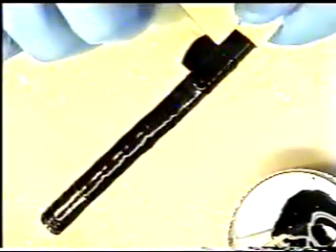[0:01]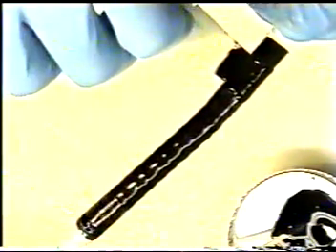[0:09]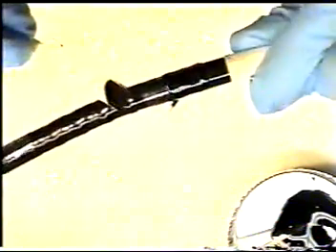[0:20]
Or binding thread or bending rubber. We want the glue joint to be as thin as possible, so during procedure it is passed through the patient without any distress.
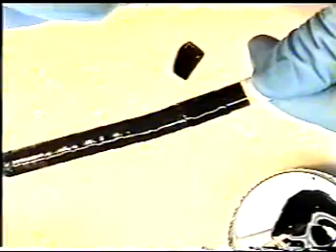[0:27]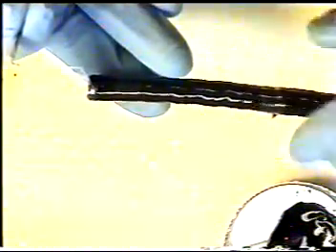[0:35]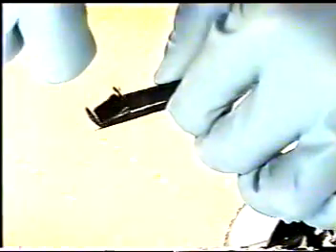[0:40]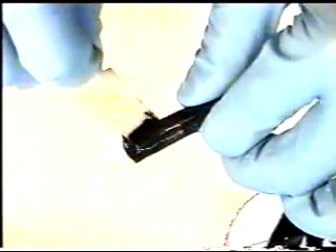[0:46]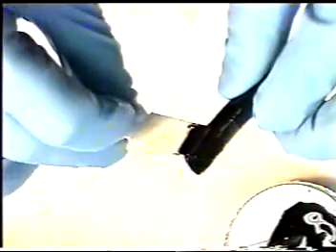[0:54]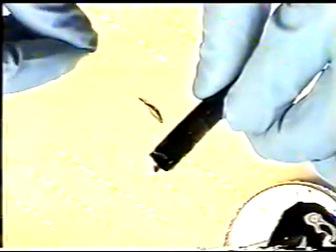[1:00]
We will now glue our top binding. Carefully hold scope, being conscious of our first glue job. Turning scope around. Covering the area in between each Scotch tape loop. Again, making it as thin as possible.
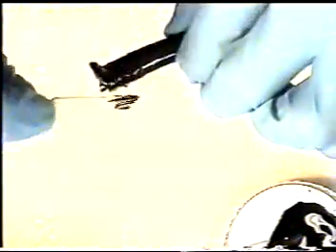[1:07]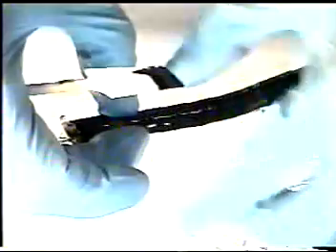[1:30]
Gluing these joints takes time and practice. It may be advisable to practice on an older or loaner endoscope. We have now glued both bindings with our paddle or toothpick.
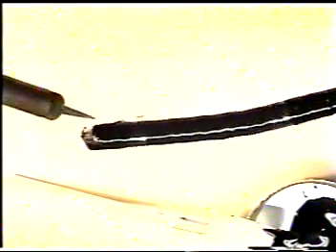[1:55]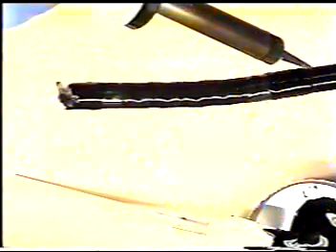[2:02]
Again, at this time, if you notice any objects pointing out of the glue, use your solder iron to carefully melt away foreign object, being extremely careful you do not melt into bending rubber sheath or insertion tube. Once we are sure that glue is uniform with no bubbles or foreign objects sticking out of our glue, we can then remove our Scotch tape.
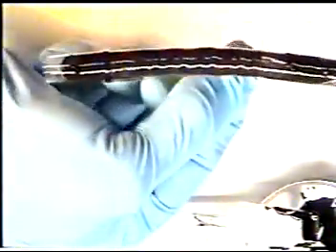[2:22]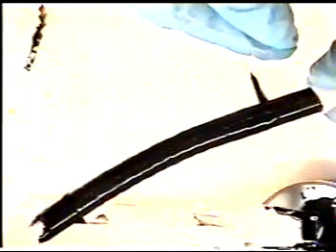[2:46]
The Scotch tape should make a clean binding. Remove all 4 pieces of Scotch tape, pulling towards the glue job. This makes for a clean binding.
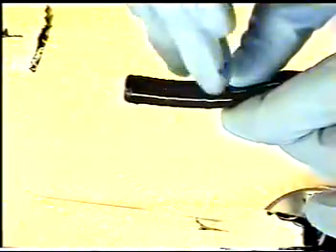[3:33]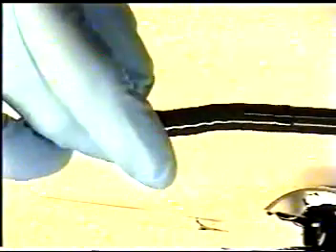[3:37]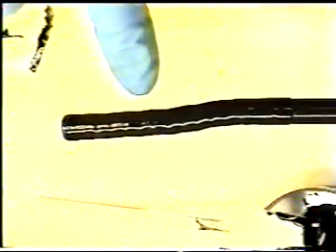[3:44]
We have now removed the 4 pieces of Scotch tape from our endoscope. Be careful not to get any epoxy on the bending rubber or insertion tube when removing Scotch tape.
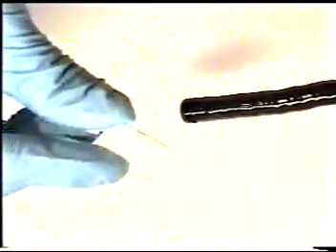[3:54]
Using a toothpick and a piece of lens paper or thin paper toweling, taking a small amount of alcohol, if any bending rubber epoxy has leaked underneath the previous Scotch tape, you can clean away any glue that had leaked out of Scotch tape to make a clean, flush epoxy joint. Turn the endoscope over if necessary in order to reach complete 360 degrees.
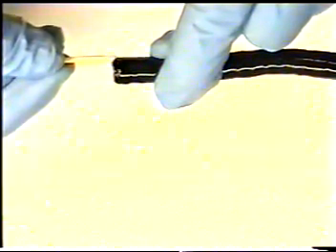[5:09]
Again, any epoxy that has leaked previously underneath the Scotch tape joints can be easily cleaned away with a toothpick and a paper towel. On smaller instruments, you can use just the toothpick and some alcohol and clean up to the glue joint to make a nice, smooth, clean edge.
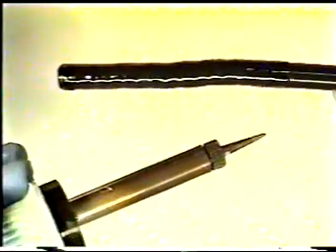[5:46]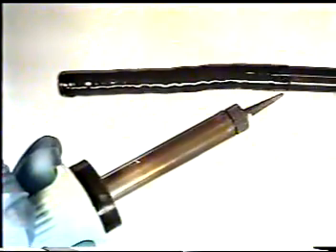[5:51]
If bubbles appear in any part of our epoxy, we can take what's left of our glue and fill in any bubbles or holes that might pop out during our gluing. Another method to get rid of any bubbles or debris is, again, use your soldering iron and gently touch epoxy to fill in hole or remove debris.
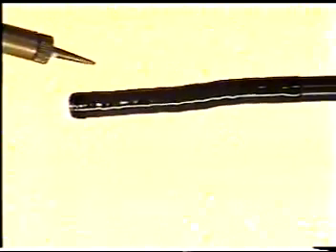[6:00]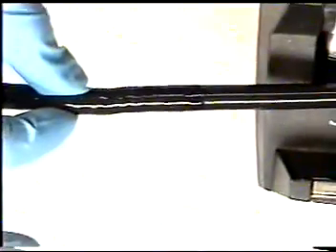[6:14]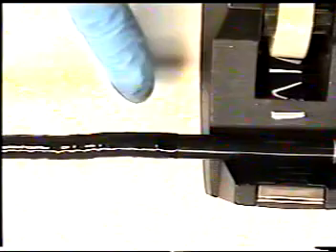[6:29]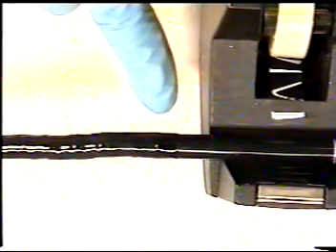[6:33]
Once you feel that glue completely covers and looks cosmetically good, take any object, in this case a tape dispenser, laying the insertion tube in cradle so our glue will not touch either our working area or any other objects which will destroy our glue.
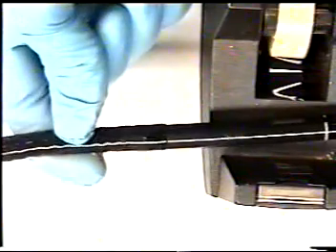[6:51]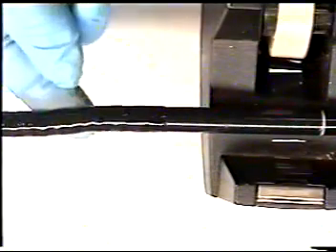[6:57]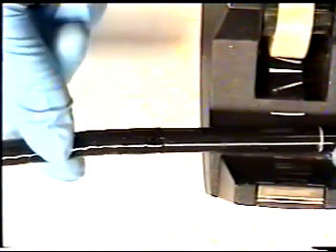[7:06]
Depending on manufacturer specifications, glue may take some time to set up. You will periodically have to go back to check your glue in order to turn the instrument if glue is sagging on one side, and to check for any bubbles or foreign debris that might stick out through our glue joints. Again, be sure to check your glue to see if it starts to sag. It will be necessary to turn the instrument around in order to make a uniform glue joint.
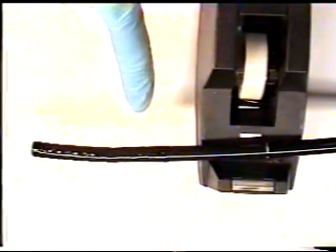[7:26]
It is advisable to let your bending rubber sheath epoxy dry overnight and at least 24 hours. This will allow the epoxy to set to manufacturer specifications in order to withstand repeated sterilization. If bending rubber epoxy is not let to set dry properly, it will chip off endoscope during sterilization and possibly even during examinations. It is very critical that your epoxy is allowed to dry properly overnight.
After your epoxy is dried overnight or 24 hours, it is advisable to check the instrument for any leaks by pressure testing the instrument in water and checking for any leaks that may be in your bending rubber replacement. If there are leaks, you will need to repeat the procedure and reapply another bending rubber sheath.
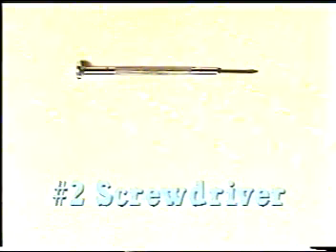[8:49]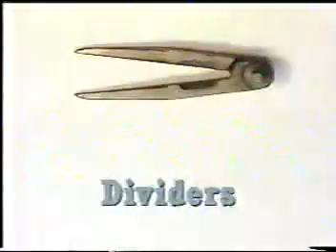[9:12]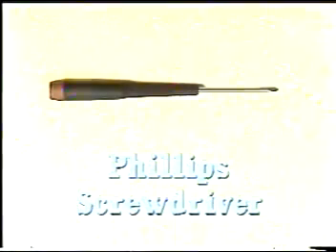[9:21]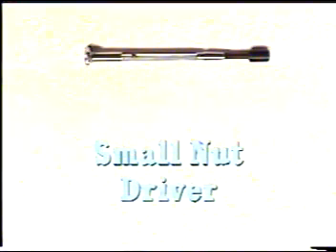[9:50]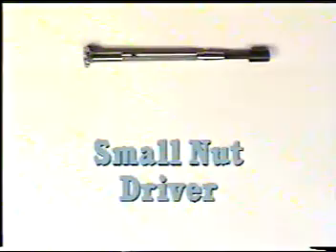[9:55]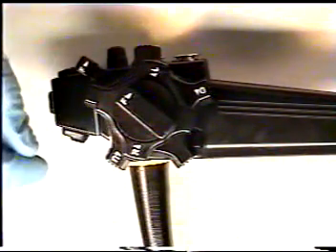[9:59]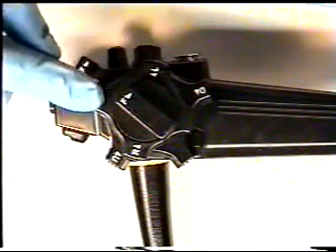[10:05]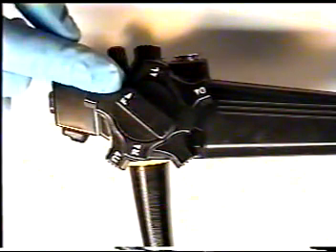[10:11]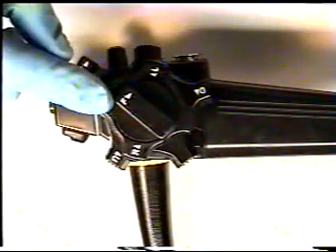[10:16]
We will now disassemble the up, down, left, right control section in order to gain access to it, to adjust the up, down, and left, right lock knobs, and to make the necessary repairs and adjustments if there are leaks in the body control section.
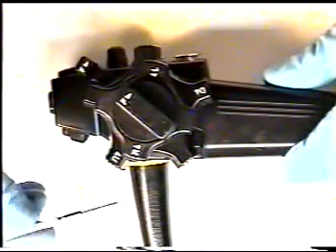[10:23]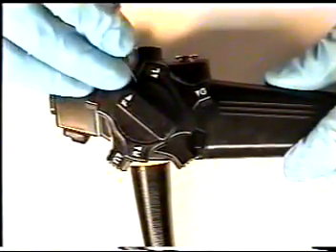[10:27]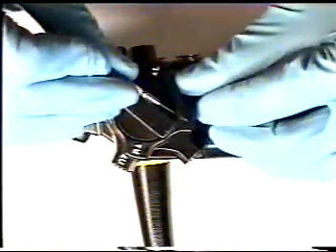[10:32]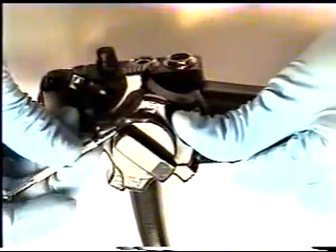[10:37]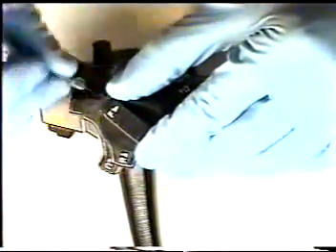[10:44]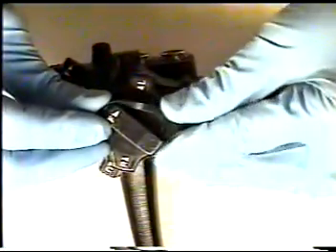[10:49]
First step, using your number 2 screwdriver, is to remove the left-right free lock knob trim ring. 90% of the time this ring will break due to the fact that it is glued in with black RTV, so it will need to be replaced.
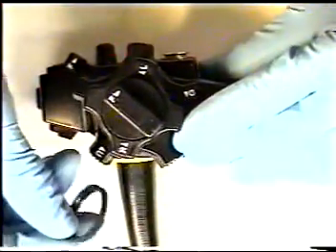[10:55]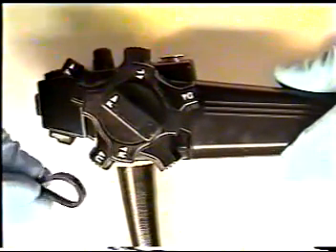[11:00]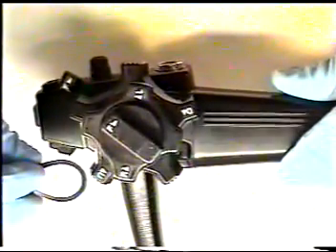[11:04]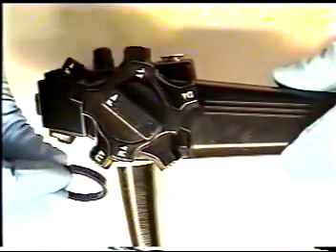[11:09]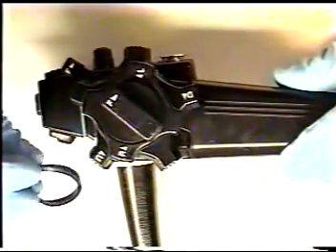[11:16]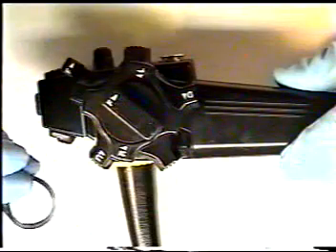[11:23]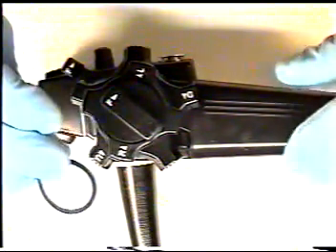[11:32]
When disassembling the up, down, left, right lock knob assembly from the body, it is best to take off each piece one at a time, laying it on your work area in sequence. So when we reassemble the up, down, left, right lock knob assembly, we can reassemble back in sequence with the parts starting from beginning to end. First, we have the left-right trim ring.
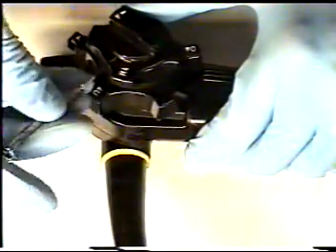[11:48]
Next step is to loosen the 3 set screws which hold on the left-right lock knob assembly cap. Find your set screws and loosen all 3.
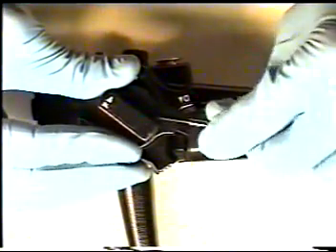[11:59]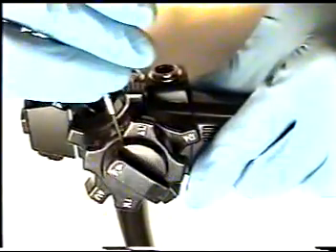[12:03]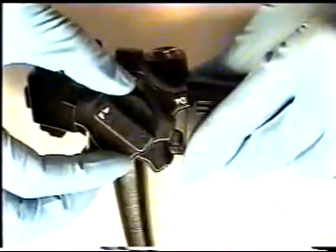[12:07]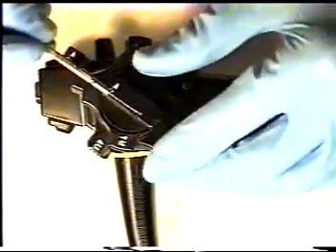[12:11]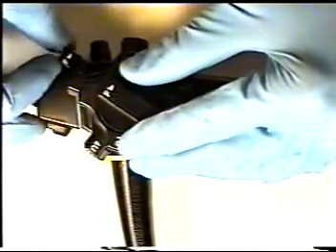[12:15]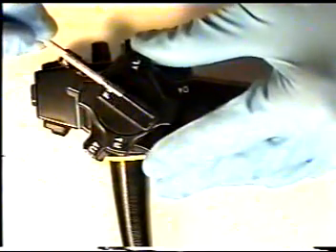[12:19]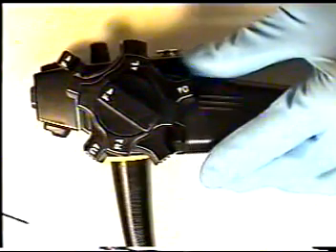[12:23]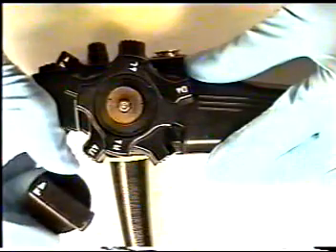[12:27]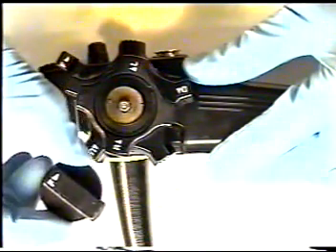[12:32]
Notice where the lock knobs fit when they are in the free position. They both line up diagonally to the head of the instrument. Again, take the parts off in sequence, lay them on your work area so you can reassemble back in reverse order.
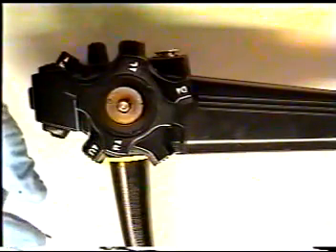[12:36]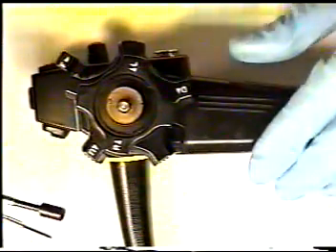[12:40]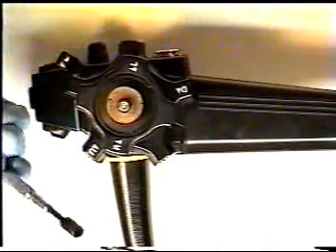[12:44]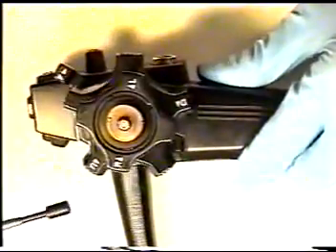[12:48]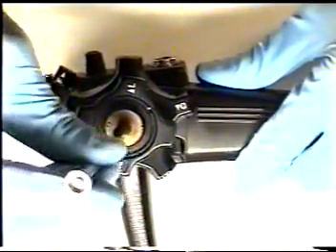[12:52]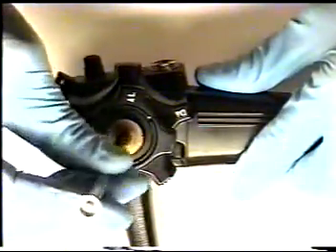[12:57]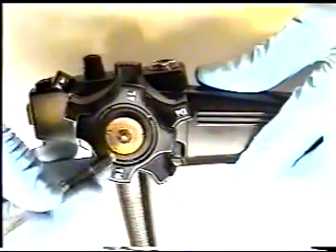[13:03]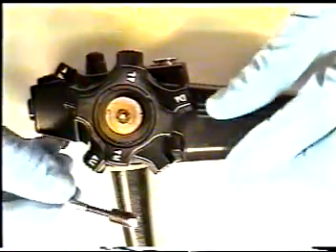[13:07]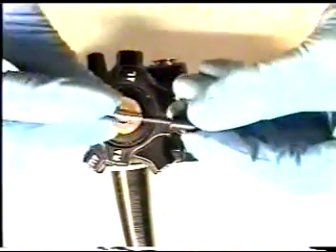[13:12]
Retrieve your small nut driver and loosen the 2 small nuts on the top of the left-right lock assembly. Put these with the other parts in sequence.
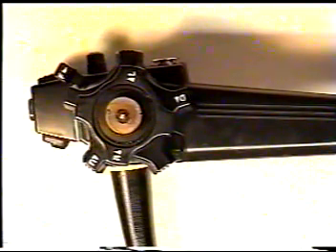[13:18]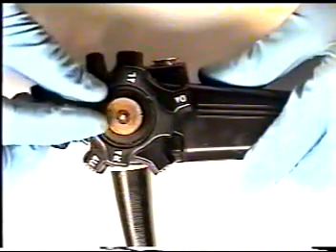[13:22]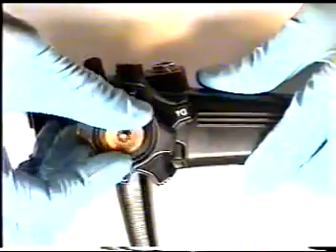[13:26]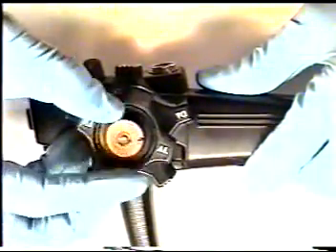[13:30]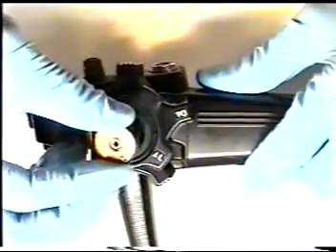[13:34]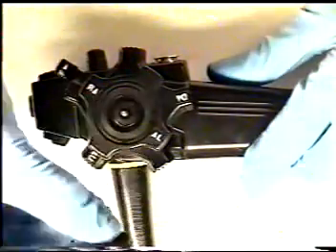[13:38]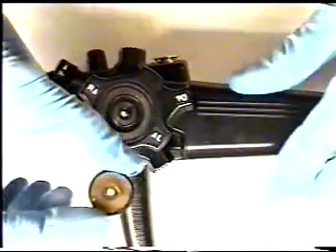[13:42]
The next step is to unscrew the left-right lock assembly counterclockwise. This assembly will only unscrew counterclockwise. Remove this assembly. Be sure to keep it intact. There are many small parts internally. Put this part with the others in sequence.
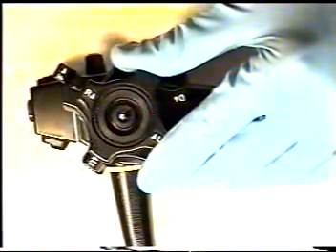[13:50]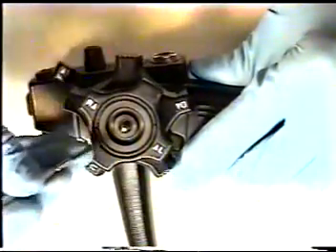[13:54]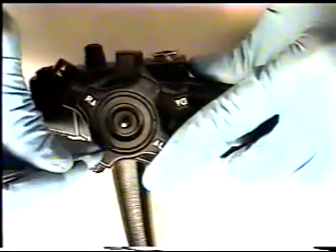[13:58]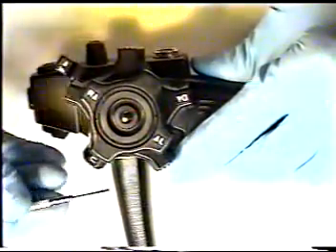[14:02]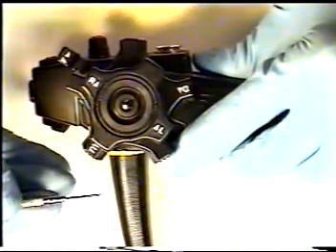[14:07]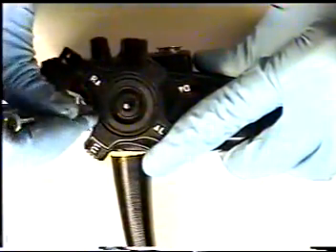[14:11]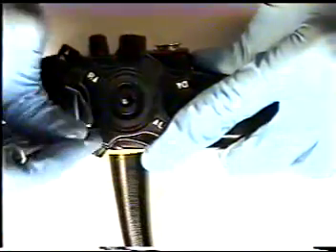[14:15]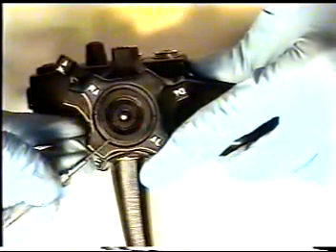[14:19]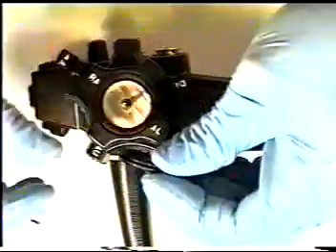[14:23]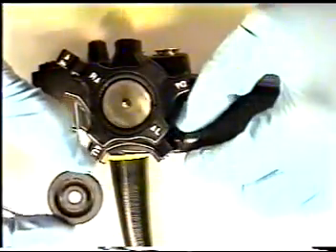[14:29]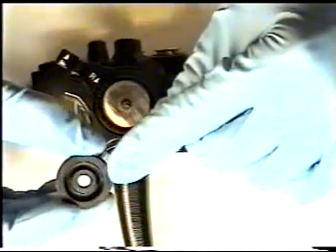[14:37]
Next step is to pry out the left-right knob airtight cap with either a small number 1 or 2 screwdriver, tweezers, or dull knife blade. Be careful not to damage the O-ring inside or the knob itself. This part, when reinstalled, will have the groove on the top. Underneath it is flat. The indented groove will be on top. Put this with the other parts in sequence.
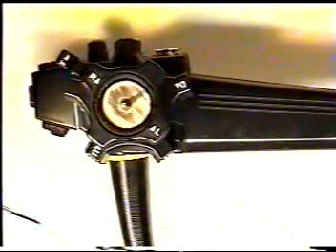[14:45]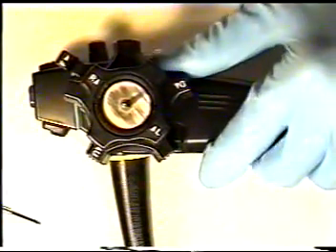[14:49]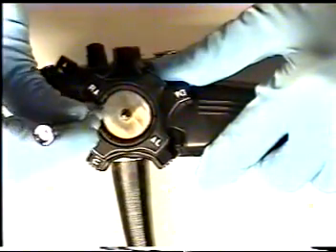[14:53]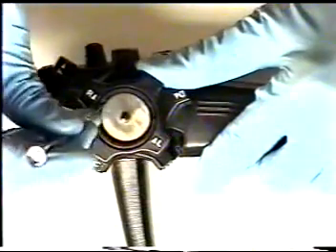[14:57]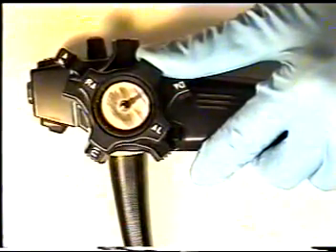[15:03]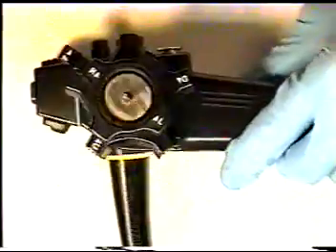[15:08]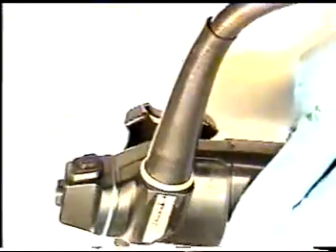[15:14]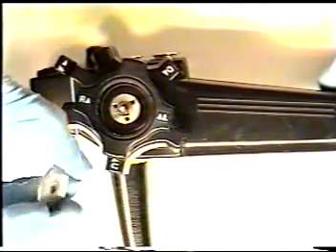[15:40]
Next step is to remove the left-right pressure plate with either a small number 1 or 2 screwdriver or tweezers. It may be necessary to turn over the endoscope and tap out this piece. It will fall out with gravity. Put your pressure plate back with the other parts in sequence.
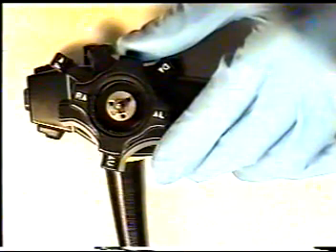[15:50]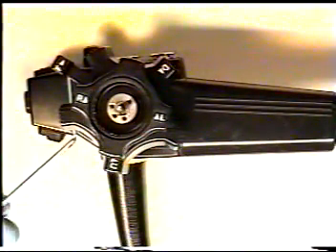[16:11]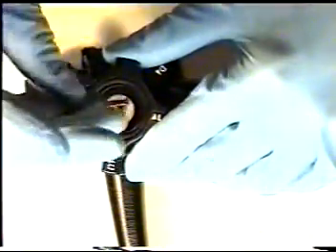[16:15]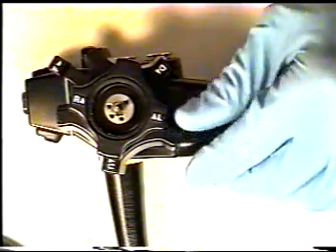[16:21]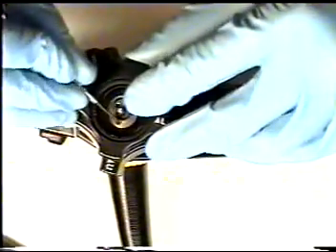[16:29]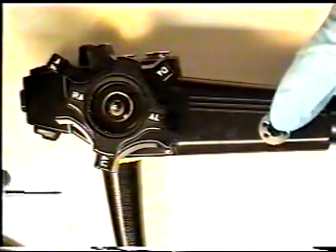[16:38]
Using a Phillips head screwdriver, unscrew the 2 small Phillips screws in the left-right pressure plate bottom retaining ring. Be sure not to lose these 2 small Phillips screws. With a small screwdriver, remove the locking ring. Put this with the other parts in reverse sequence.
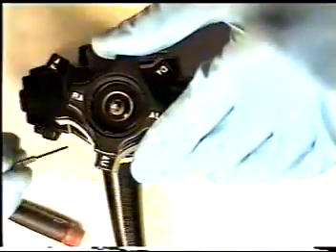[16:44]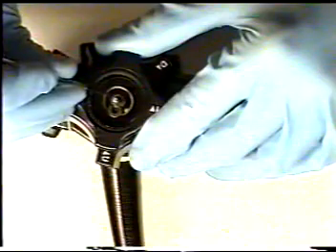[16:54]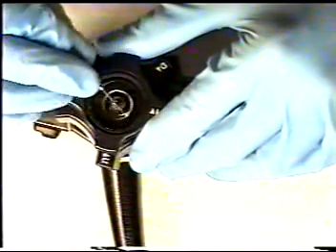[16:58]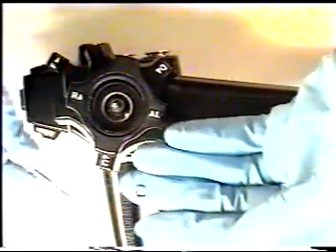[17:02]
Slide off your C-ring from your left-right bottom pressure plate, which attaches to the center shaft. Put your C-ring with the other parts again in sequence.
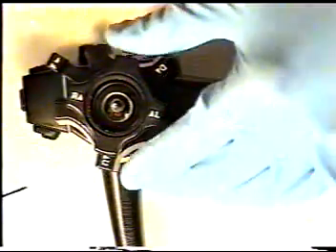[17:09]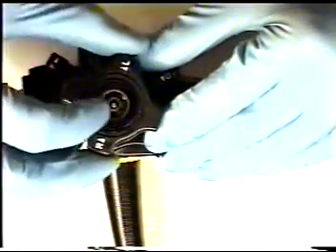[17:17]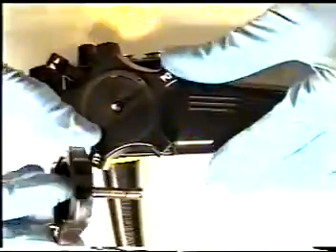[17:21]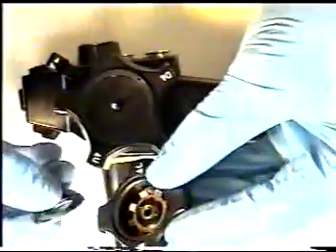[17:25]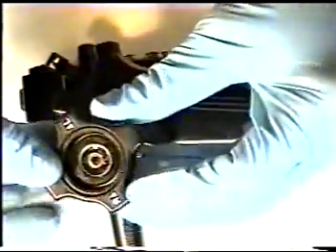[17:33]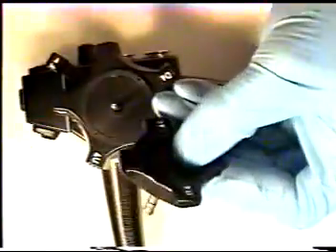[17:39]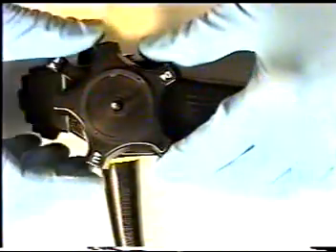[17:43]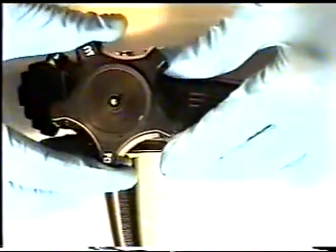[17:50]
We can now pull off the left-right lock knob. It should slide off. The pressure plate will fall out, but you can keep this inside the left-right knob assembly. Put the knob assembly with the other parts in reverse sequence. The up-down knob will now be able to pull off straight up the center shaft, exposing the up-down free locking mechanism. Put your up-down knob with the other parts in reverse sequence.
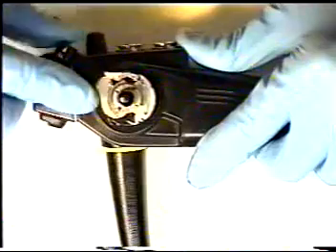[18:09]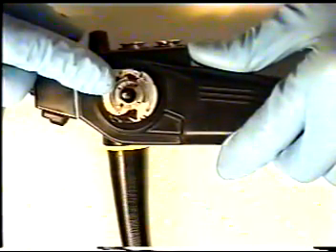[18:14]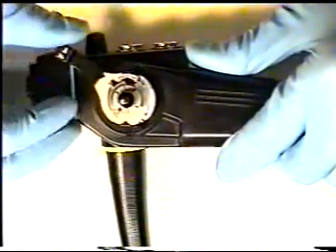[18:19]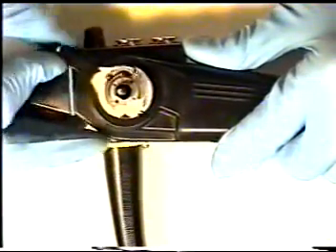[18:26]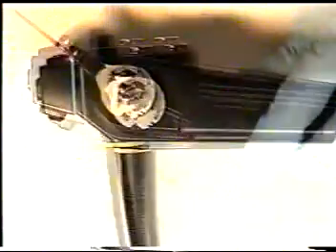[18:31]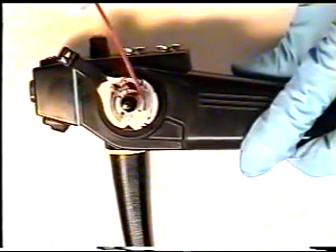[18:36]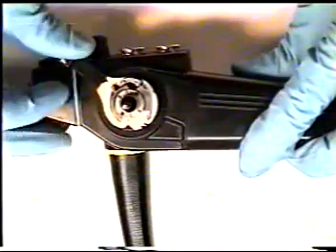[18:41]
This is as far as we will go with our knob assembly. We will now lubricate this locking assembly with a good quality LPS or WD-40. Spray a very small amount of LPS or WD-40 in the up-down free lock mechanism.
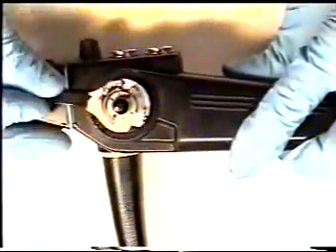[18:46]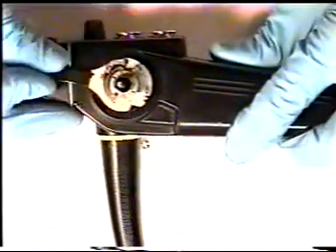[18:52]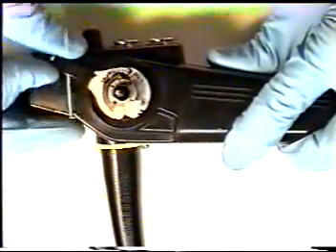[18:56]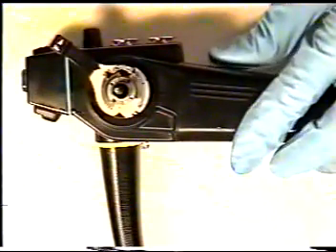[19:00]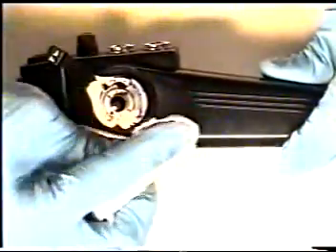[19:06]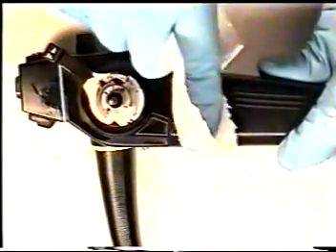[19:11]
Move the assembly back and forth to let the greaseless lubricant permeate the locking mechanism. Use a paper towel to clean up any excess greaseless lubricant from the Olympus body section.
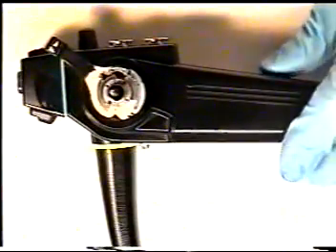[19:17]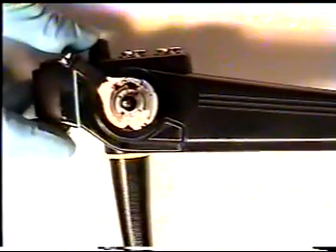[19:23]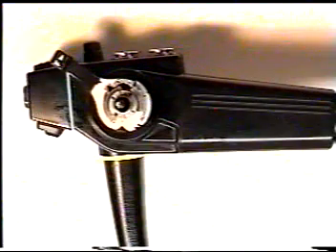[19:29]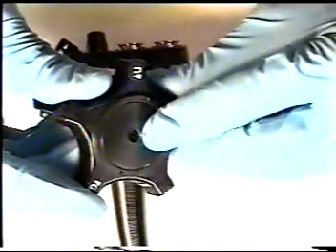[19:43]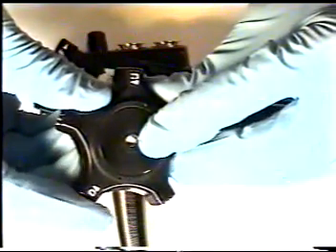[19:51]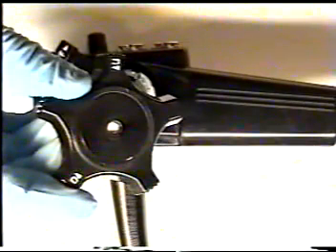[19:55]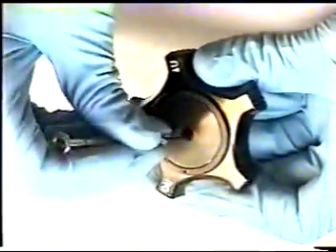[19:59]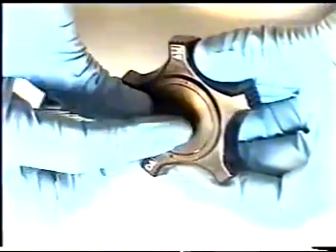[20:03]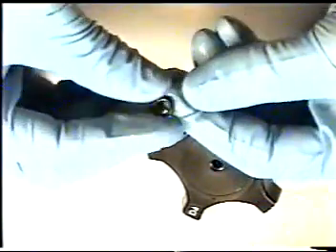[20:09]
We will now reassemble the Olympus up-down left-right locking knob assembly and correct any leaks upon reassembly. The up-down knob has internally an O-ring. You can remove this O-ring with a small screwdriver, being careful not to cut into the O-ring itself. Again, being very careful, remove the O-ring from inside the up-down knob shaft. 9 times out of 10, this is the O-ring that will cause leaks in the up-down knob itself.
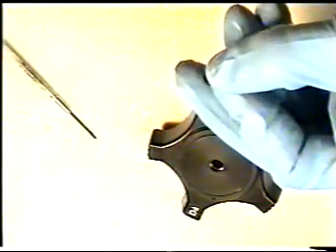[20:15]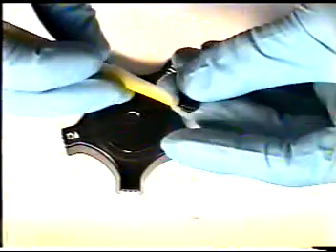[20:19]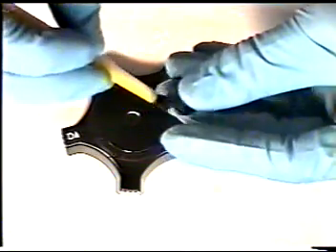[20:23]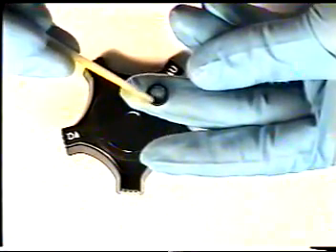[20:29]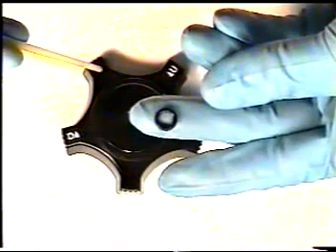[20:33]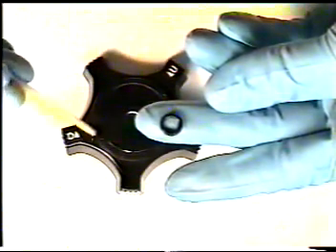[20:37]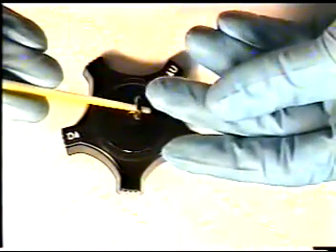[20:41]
Again, make sure your O-ring is clean of all debris. If this O-ring has any pit marks or scratches or cuts, or if it's even broken, it will need to be replaced, because it will not form a proper airtight seal with the knobs and the shaft. So if this O-ring is damaged in any way, it will need to be replaced. Reinsert your O-ring back into the knob section.
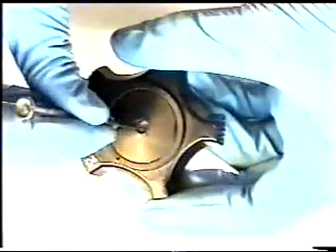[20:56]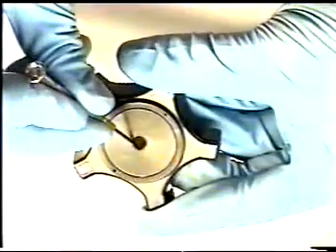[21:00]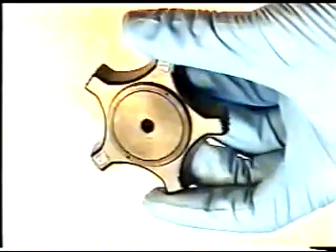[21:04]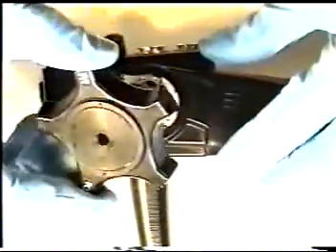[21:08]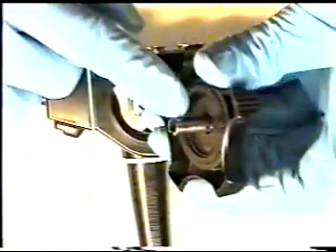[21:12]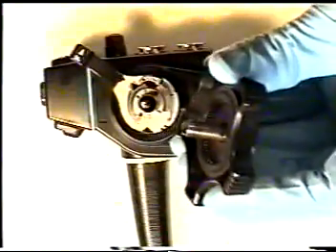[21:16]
It will take a little doing. You might need your small screwdriver to fit it back into the slot at the top of the knob. Reinstall the up-down knob back onto the shaft. Be sure there is no debris on the up-down shaft.
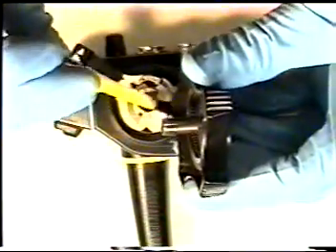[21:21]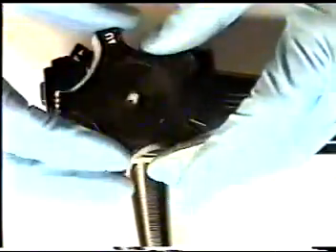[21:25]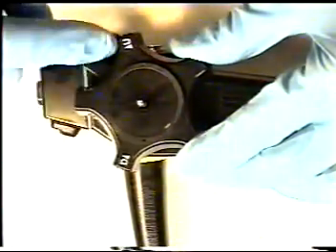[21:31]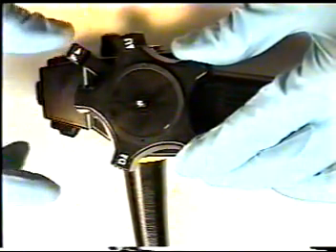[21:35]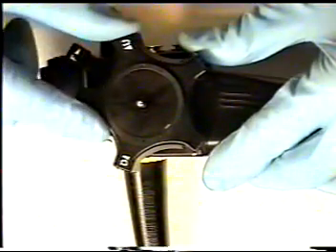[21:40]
You can use your paintbrush with white lithium grease to clean off any debris. Slide your up-down knob onto the shaft with the up-down letters pointing towards the head of the instrument. We will now adjust the up-down knob.
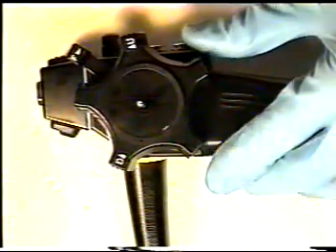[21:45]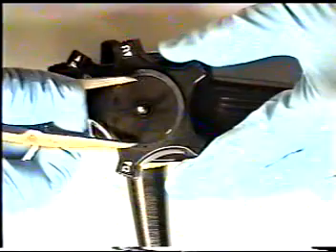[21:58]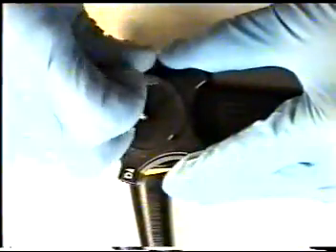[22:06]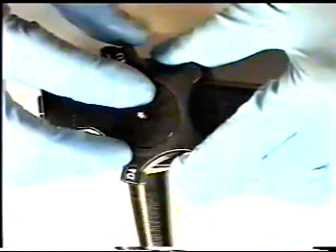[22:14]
Olympus knobs are usually very tight. You can, however, loosen them a little bit by taking a pair of dividers and fitting them into the 2 holes on the ring on top of the up-down knob. You can unscrew this ring and remove it, taking off the knob itself from the up-down assembly.
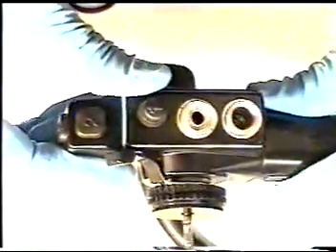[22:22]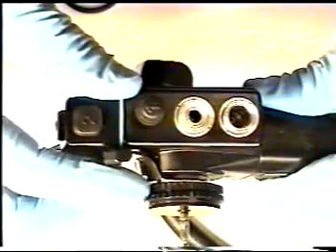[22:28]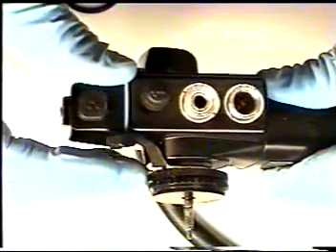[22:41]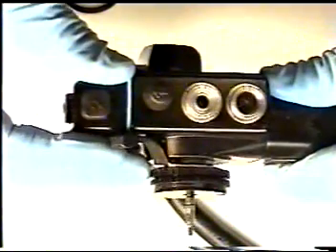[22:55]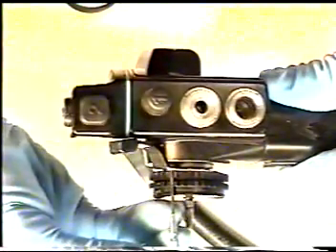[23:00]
There are 2 sets of rings. In order to loosen the tightness on an Olympus scope, these rings move independently. You'll need to unscrew this ring counterclockwise to loosen the stiffness of the knobs. Be sure to match the grooves when reapplying the knob.
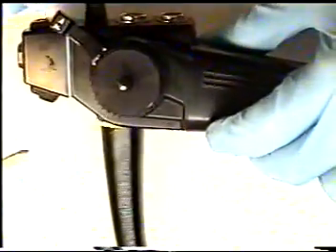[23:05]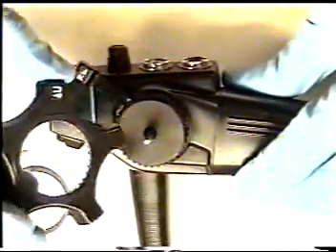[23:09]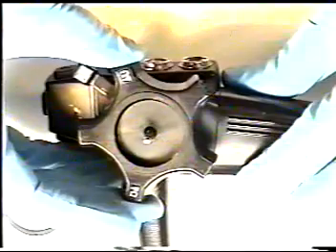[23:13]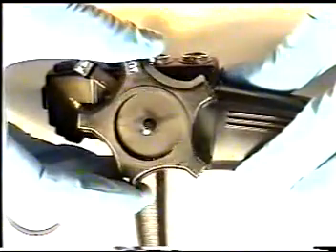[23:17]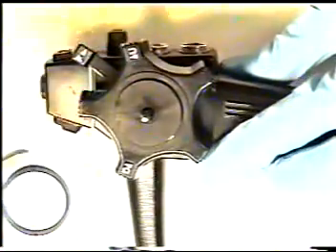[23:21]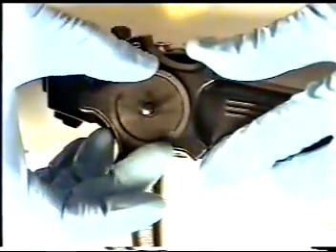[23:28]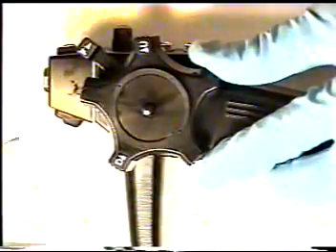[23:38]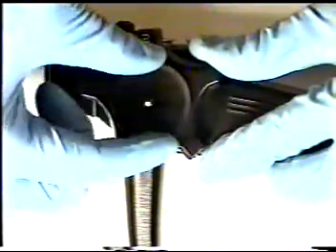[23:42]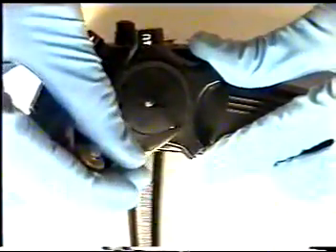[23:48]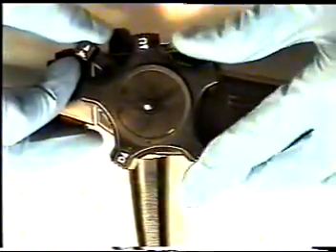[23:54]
Once you have turned the grooves counterclockwise a few turns, reapply the up-down knob. Place your retaining ring back on over the threads and tighten clockwise. Give it a good hand-tight seal.
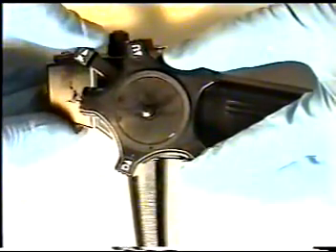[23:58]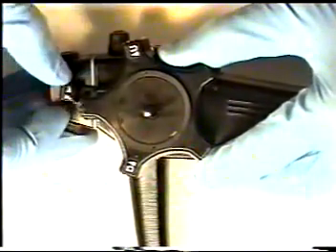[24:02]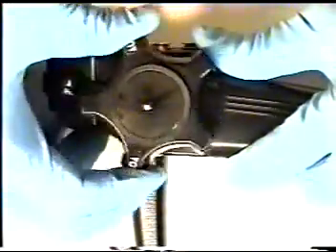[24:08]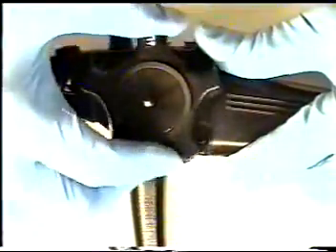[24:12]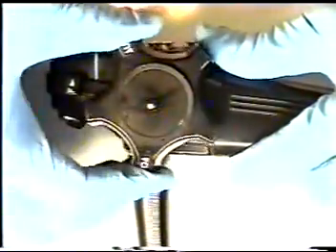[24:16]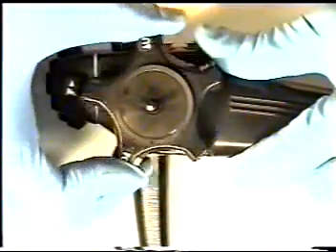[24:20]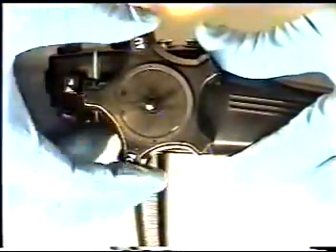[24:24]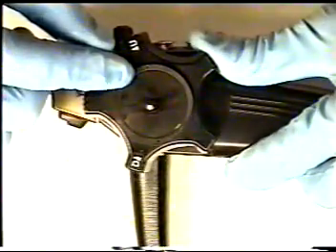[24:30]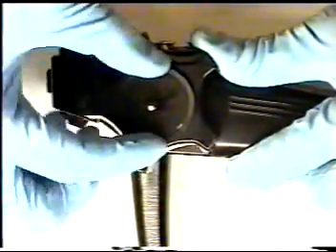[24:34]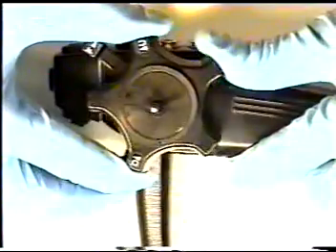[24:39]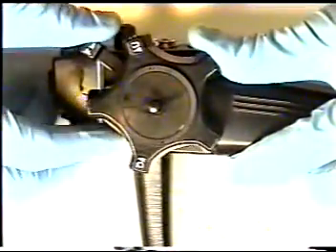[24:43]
Now, apply your lock by flicking your up-down lock assembly towards the head of the instrument. And now you can feel to check for the tightness that you have released by adjusting the cam on the up-down lock assembly. If it is still too tight, you can remove the ring again and adjust the cams clockwise or anti-clockwise to get the proper tightness that you prefer.
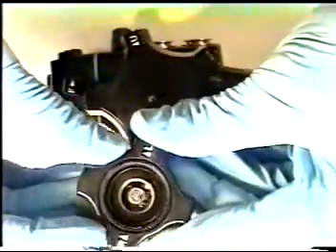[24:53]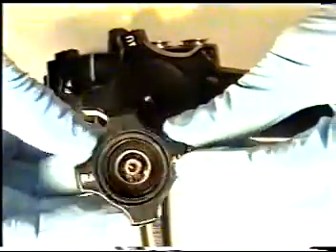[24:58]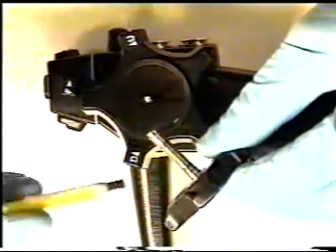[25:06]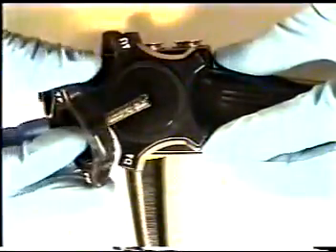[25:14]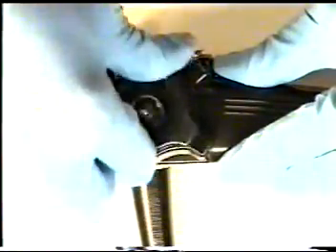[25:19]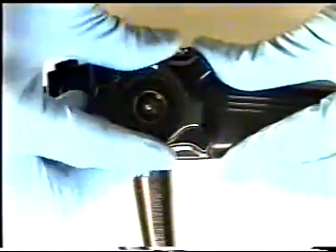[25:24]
We will now reapply the left-right knob assembly. Again, be sure that the letters and arrows face towards the head of the instrument. Clean off any debris using your paintbrush and white lithium grease. Slide the left-right knob over the shaft, feeling the shaft going into the body section, making contact with the grooves inside the chain drive assembly.
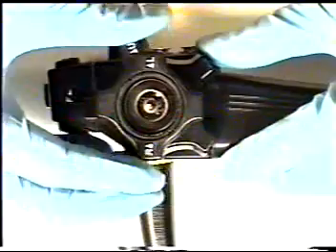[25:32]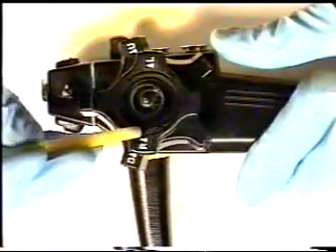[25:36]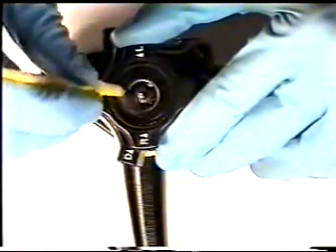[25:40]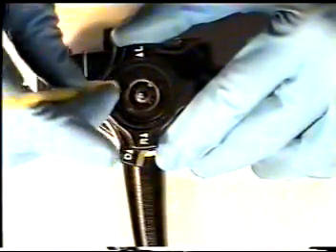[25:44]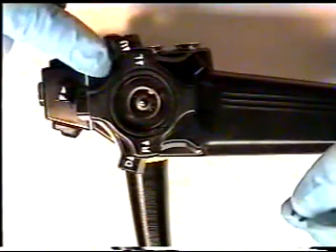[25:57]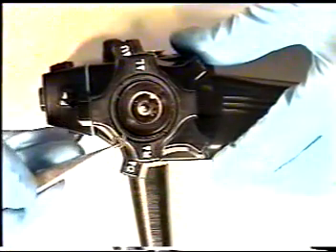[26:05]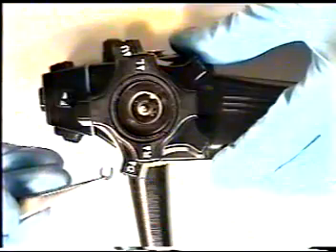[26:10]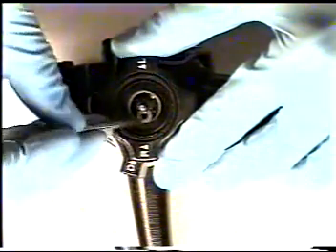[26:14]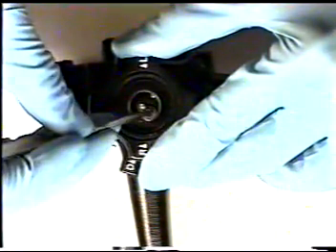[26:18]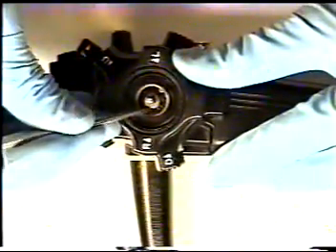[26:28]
Using your paintbrush with white lithium grease, clean off the left-right pressure plate. Now, from the parts that you have reverse sequenced, we have now reapplied the up-down knob and the left-right knob. We will now replace the C-clip to the shaft over the left-right knob using a pair of tweezers. Fit the C-clip in the slot above the base of the left-right knob. Slide the clip onto the shaft.
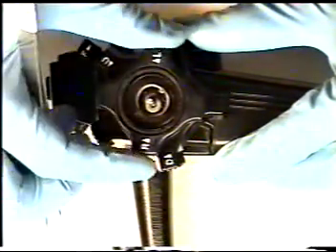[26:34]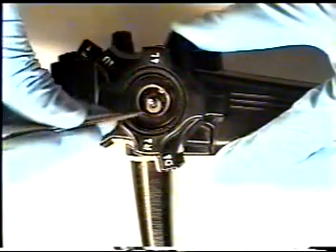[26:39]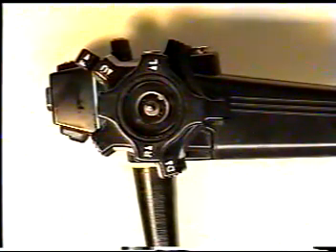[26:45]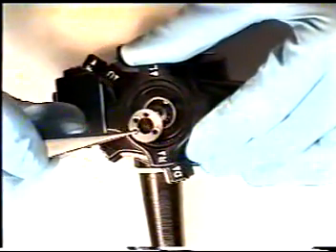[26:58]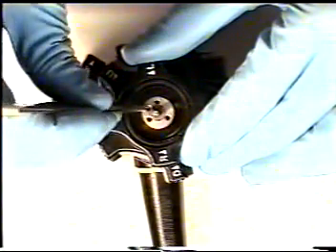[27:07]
If this C-clip did not fit, it means that the left-right knob was not seated down properly into the chain drive assembly inside the body section. Next step is to retrieve your locking ring from the parts that you have reverse sequenced. There are two holes which the Phillips screws will fit in. They will match with the holes in the base plate of the left-right knob.
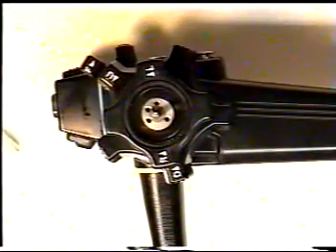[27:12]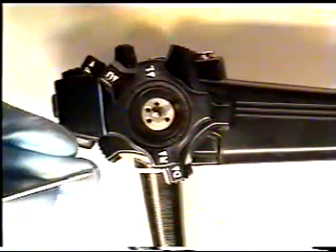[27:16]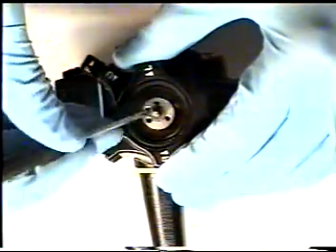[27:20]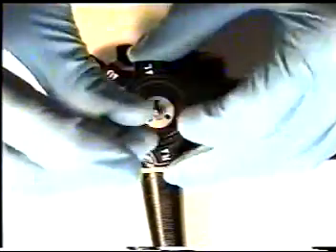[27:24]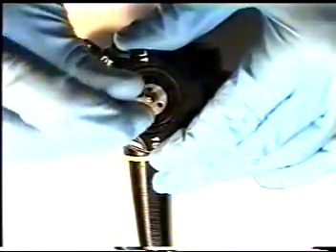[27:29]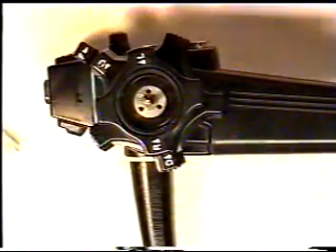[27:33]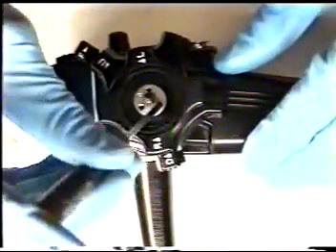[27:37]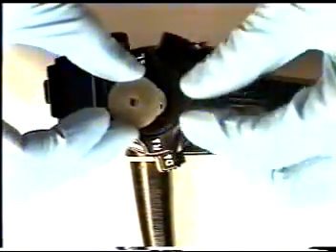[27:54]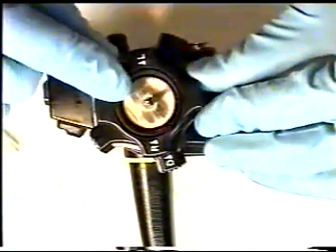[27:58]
Retrieve your Phillips screws with your Phillips screwdriver. Reapply and tighten down, hand tight, your Phillips screws. Retrieve your other plate and clean it off with some paper towel or lens paper. Put the clean side down the shaft so it rests on top of the left-right pressure plate.
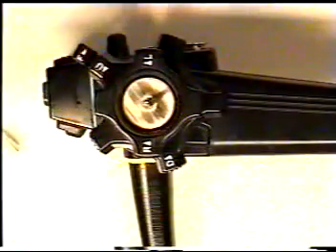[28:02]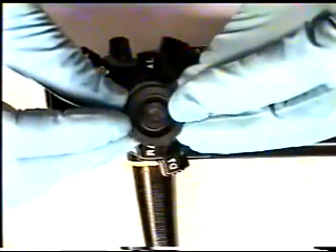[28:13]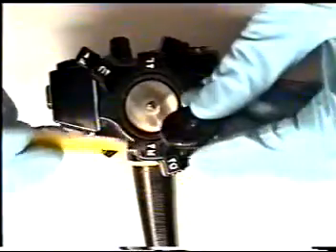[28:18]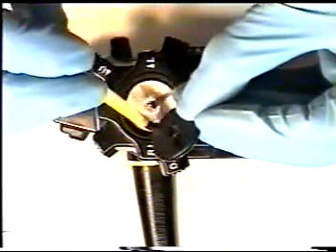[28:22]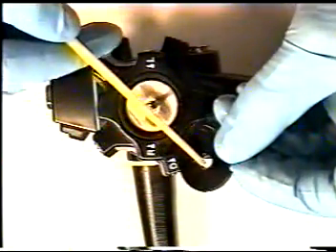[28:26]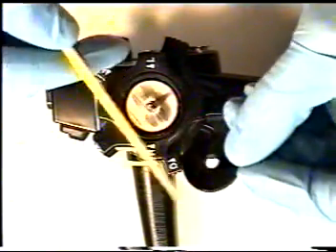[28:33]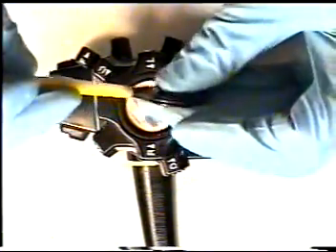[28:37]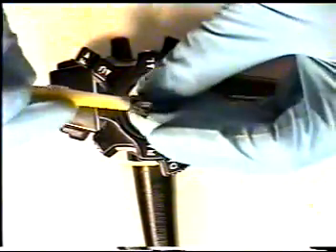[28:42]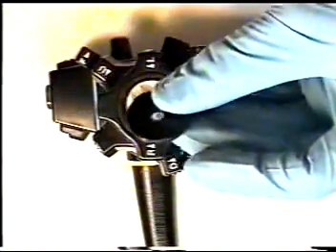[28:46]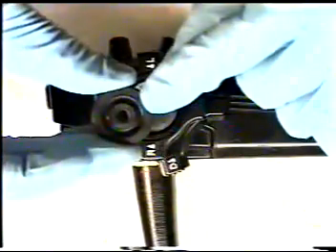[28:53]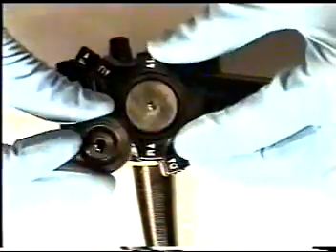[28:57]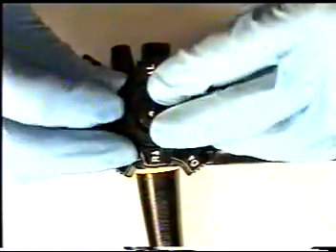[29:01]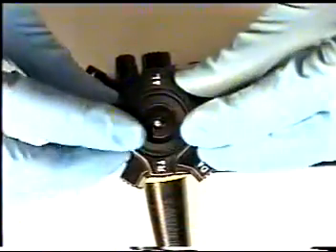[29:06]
Next step is to retrieve from your reverse order sequence parts your left-right waterproof cap. Using your paintbrush and white lithium grease, carefully clean out the O-ring in between. Again, if need be, it might need to be taken out, checked for any cuts or tears or breaks, and replaced if necessary. Clean out the O-ring, and in addition, clean the O-ring on the outside perimeter of the watertight cap. When reapplying this cap to the left-right knob, be sure that the open groove is facing up. Careful not to pinch the O-ring.
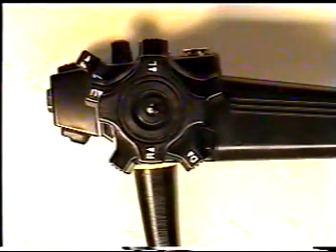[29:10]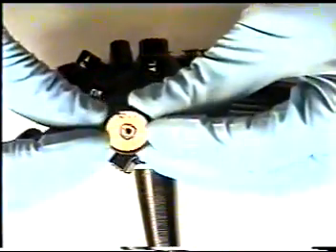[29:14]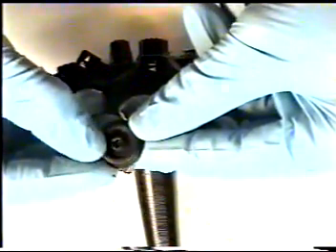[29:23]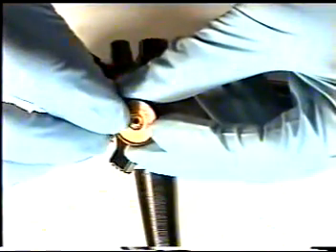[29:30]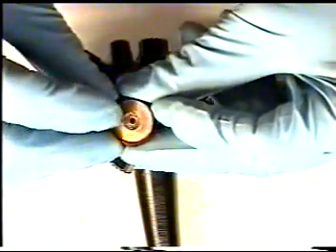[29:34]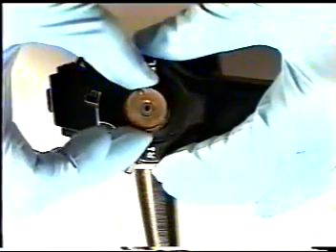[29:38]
Next step is to grab your left-right locking mechanism. It goes on with the open groove facing down. Be careful when refitting this piece, as the internal parts will tend to push up and break away if not seated down properly. This unit screws on counterclockwise.
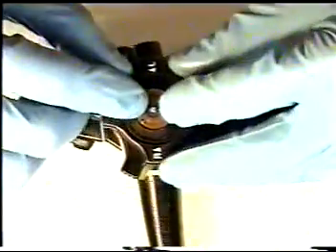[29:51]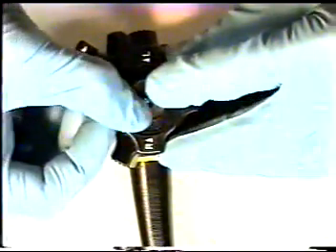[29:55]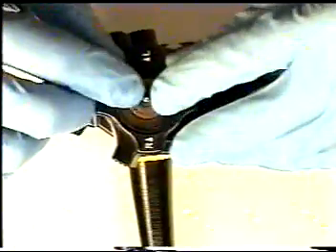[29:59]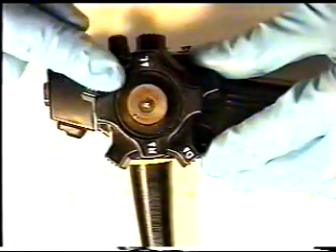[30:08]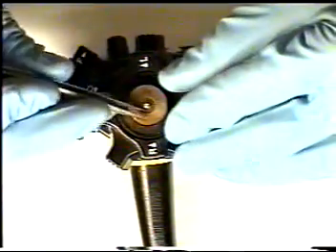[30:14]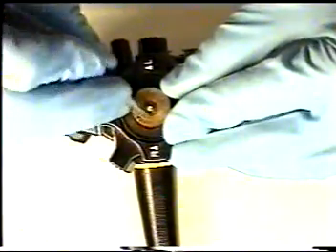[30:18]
Be sure to push down the pressure plate if it has popped off. Now we will adjust the left-right locking mechanism. If for any reason the parts in here have popped out,
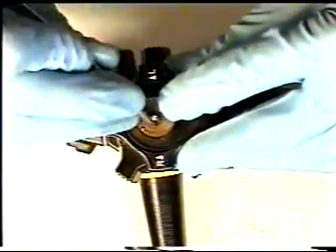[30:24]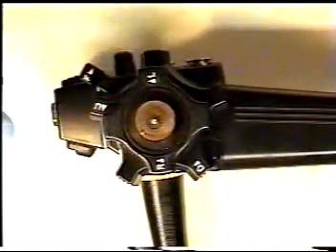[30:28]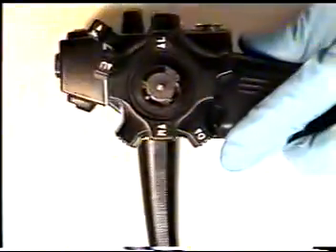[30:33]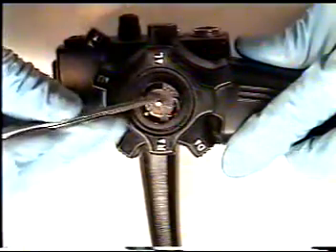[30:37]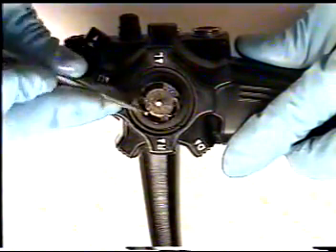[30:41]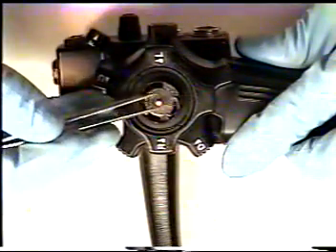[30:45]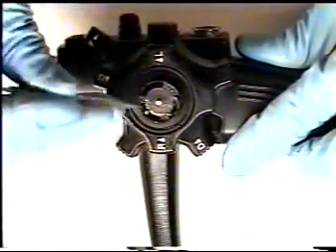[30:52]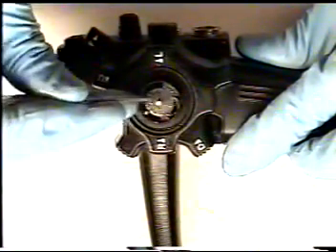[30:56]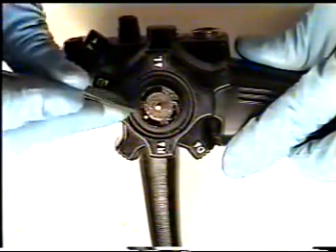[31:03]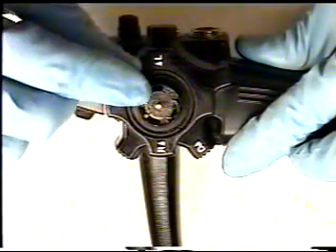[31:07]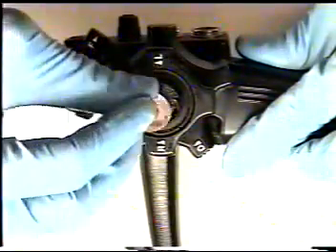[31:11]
you may need to reseat them by pulling off the copper top plate. Removing the copper top plate exposes the internal greased assembly. There is a locking pin. There are 2 copper springs and a tri-locking assembly that needs to be flush. If necessary, these parts will have to be moved until clips are uniform with the sides and the locking clip. Once everything is seated, reinstall your copper plate.
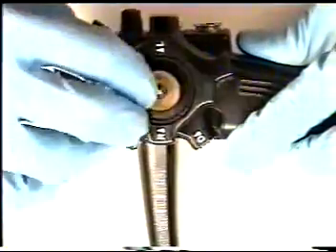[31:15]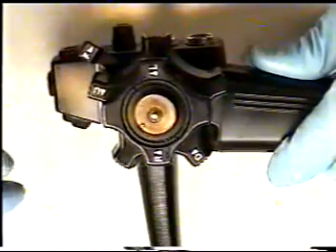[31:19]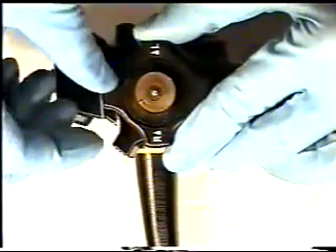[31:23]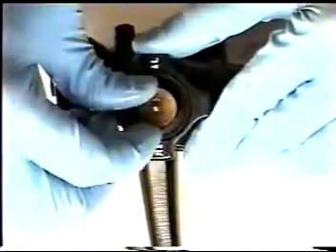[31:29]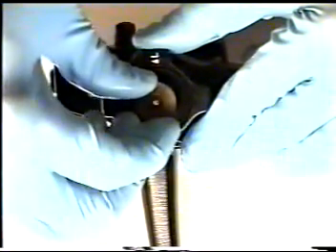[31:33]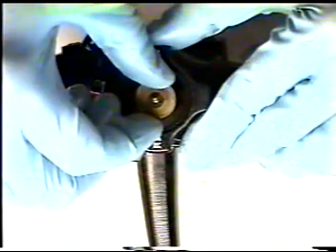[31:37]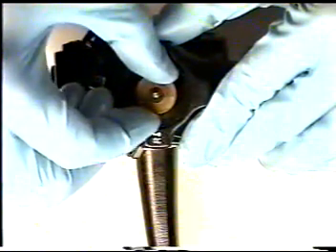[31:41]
To adjust the left-right locking assembly, with your hand, tighten the assembly counterclockwise, then back it off approximately a quarter turn to 2 o'clock.
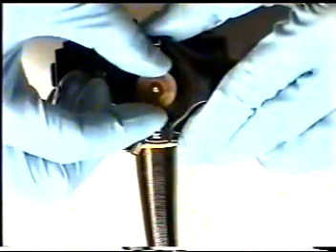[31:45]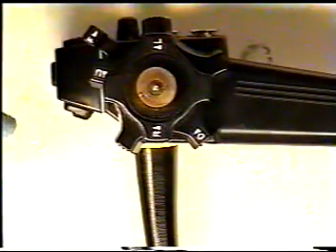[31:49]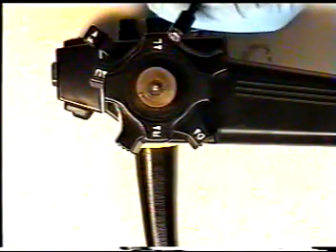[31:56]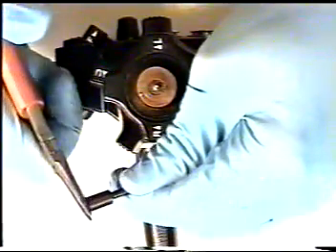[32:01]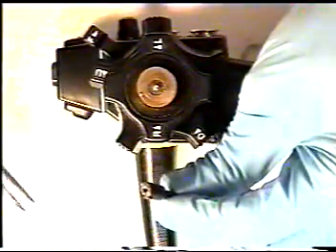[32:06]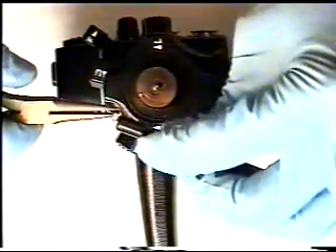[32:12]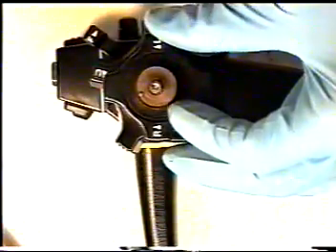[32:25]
The next step is to break apart the small nuts that we previously took off. There are 2. Take out your nuts. Take the first nut and screw down onto the shaft using your nut driver. Tighten down, finger tight.
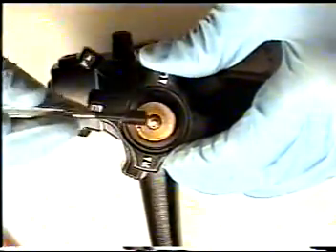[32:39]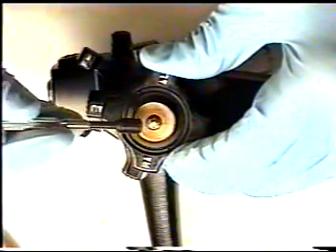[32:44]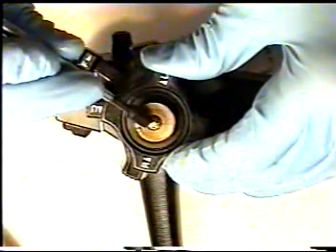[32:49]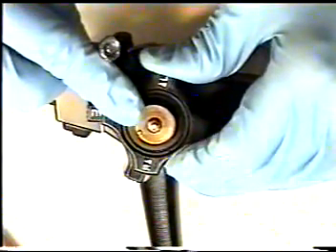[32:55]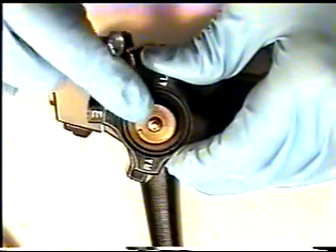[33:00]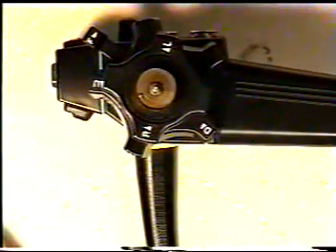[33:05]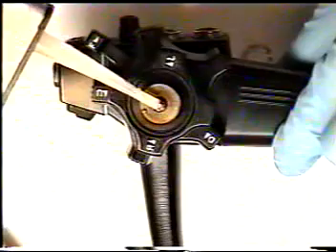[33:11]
Do not apply excessive force to these nuts on the shaft, otherwise it will break the control section shaft, which then will need to be sent to a repair facility because it is a very complicated repair. Again, do not apply excessive force to these nuts on the shaft. Use a small amount of Loctite to the top of the shaft post.
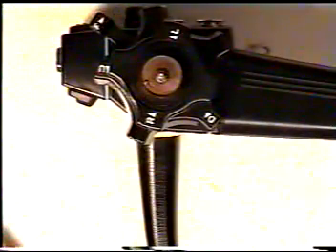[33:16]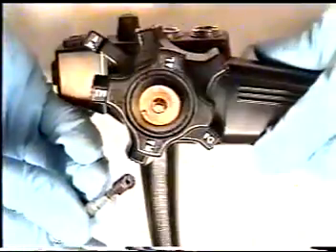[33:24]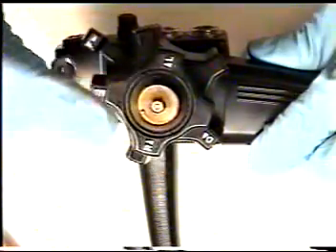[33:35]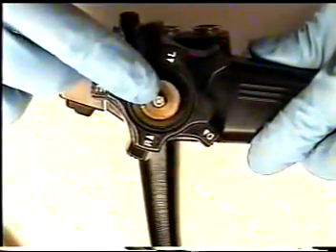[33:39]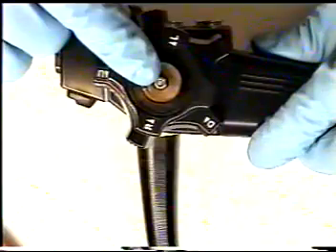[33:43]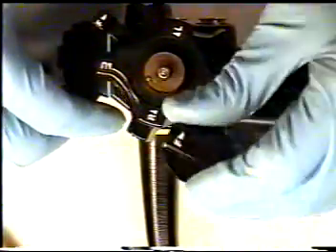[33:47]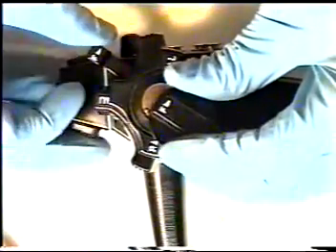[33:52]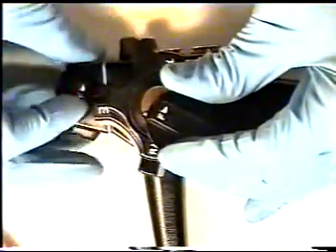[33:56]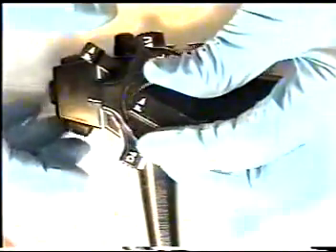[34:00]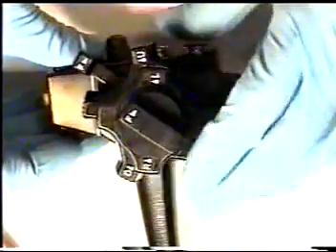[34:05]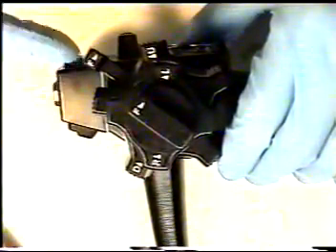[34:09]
Retrieve your second nut and screw down carefully onto the first nut. Again, only finger tight. Do not apply excessive force to these nuts on the shaft, otherwise it will break the shaft. Once the nuts are down and a small amount of Loctite is applied, we will take the left-right locking free cap, and being sure that the up-down is in the free position, we will match up the left-right free lock with the up-down so that they are diagonally equivalent.
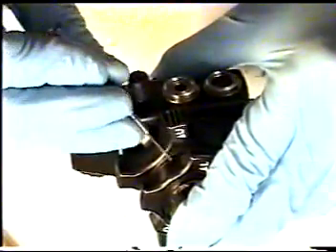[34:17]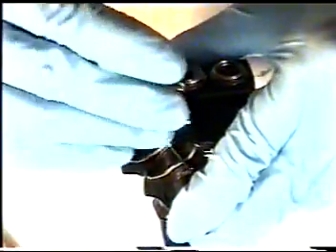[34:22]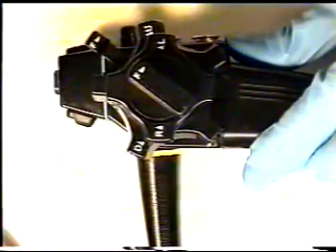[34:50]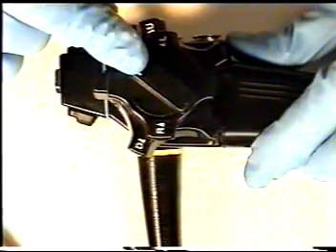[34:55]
Using 2 fingers on top of the left-right cap, retrieve your small number 2 screwdriver and tighten the 3 set screws. Once we have done that, we will now check the left-right lock mechanism to be sure that it is operating properly within manufacturer's specifications. It is not necessary to adjust the tightness on the left-right knob.
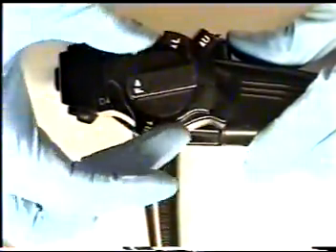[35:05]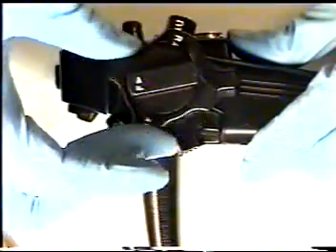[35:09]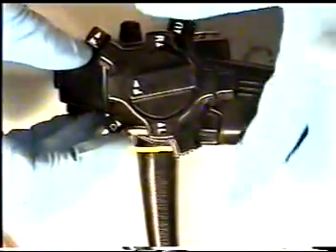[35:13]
By flicking the left-right free button to the lock position, we test to make sure that the knobs do lock and retroflex the distal end by holding it in place. To check to be sure that it is free, flick it to the free position and the knobs should bend back to a loose position.
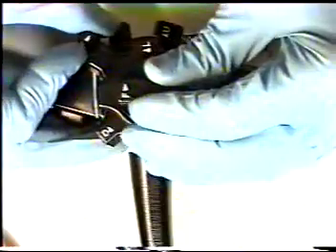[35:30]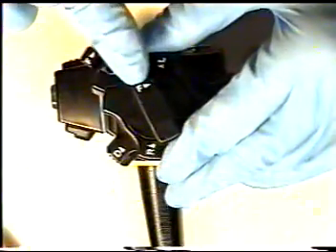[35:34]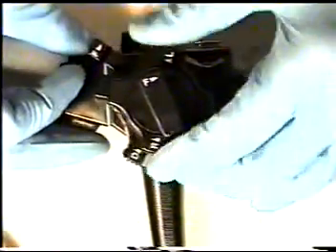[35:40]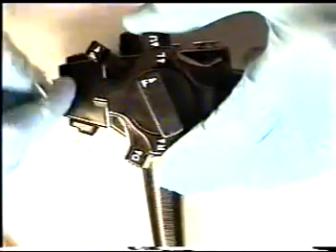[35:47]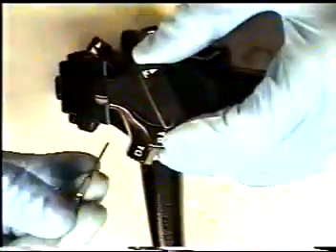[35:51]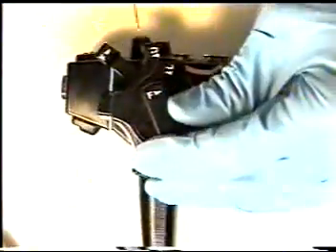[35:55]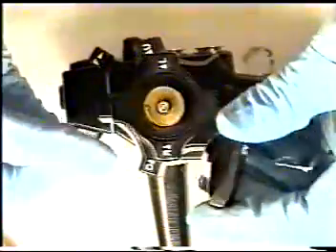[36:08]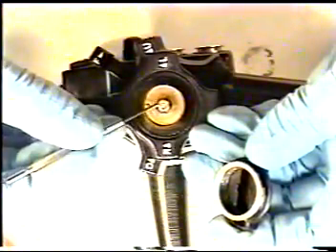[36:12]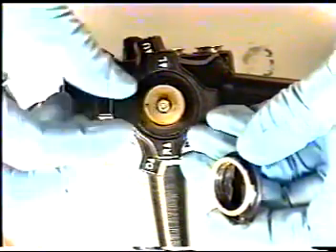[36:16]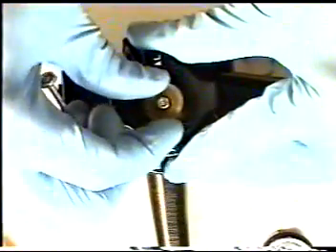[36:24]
If the left-right free cap does not match up with the up-down free knob, in this case we'll need to loosen the 3 set screws again and match it up with the up-down free knob. If after performing this adjustment the endoscope is not locking properly with the left-right, it will be necessary to remove the cap, the 2 nuts off the shaft, and perform the procedure again where you hand tighten the knob counterclockwise and then loosen off to a clock position.
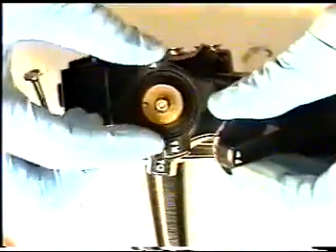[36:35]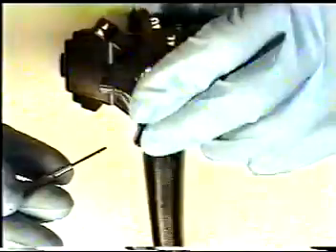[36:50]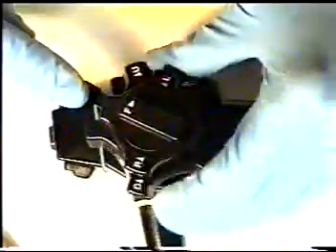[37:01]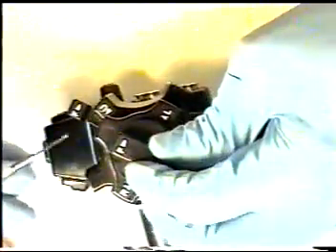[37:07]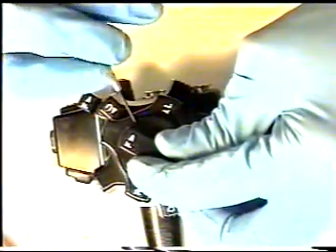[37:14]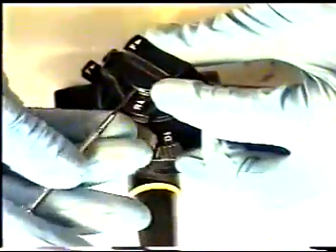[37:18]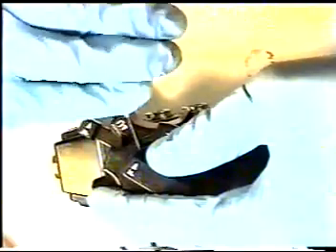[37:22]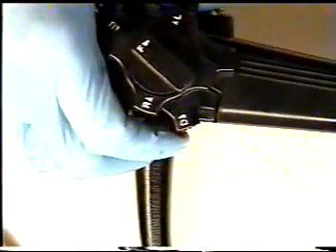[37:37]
Once you have achieved the proper locking feel for the left-right knob, then you can reseal the knob assembly. Again, be sure that both free knobs match in diagonal position. It may take several times in order to match these. Be sure to tighten down the 3 set screws properly in order to seal the left-right cap to the body section.
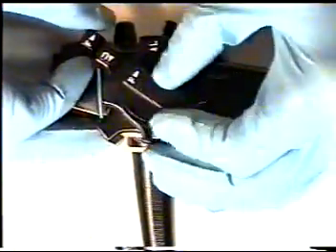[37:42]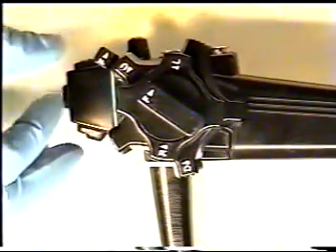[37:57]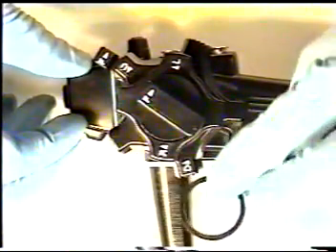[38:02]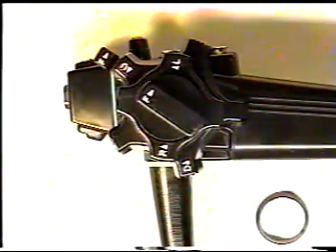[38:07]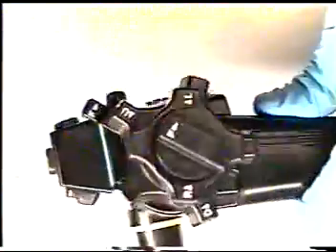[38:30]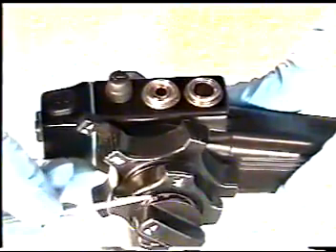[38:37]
Once you have achieved the up-down and left-right lock knobs to meet diagonally and to properly lock the left-right angulation knob, we will need to reapply the SP8KTR left-right trim ring. Using your black RTV, apply small amounts to the 3 set screw holes in the left-right lock knob assembly. This seals up the hole, otherwise it will leak when pressure tested. Seal all 3 Phillips head screws with black RTV. This will also keep the trim ring from falling off.
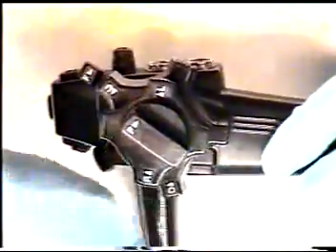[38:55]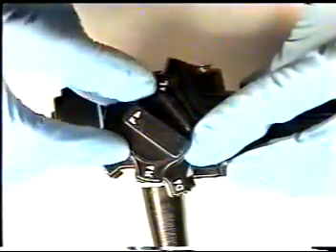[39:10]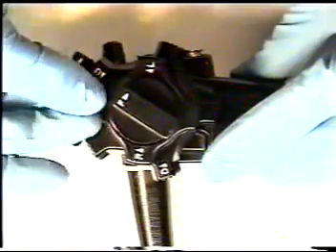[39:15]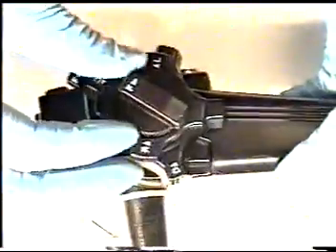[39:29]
Take your trim ring and with the notch side up, slide it over the longer post and carefully slide it up and over the knob. Use your number 1 screwdriver to be sure it has fit around the left-right lock knob.
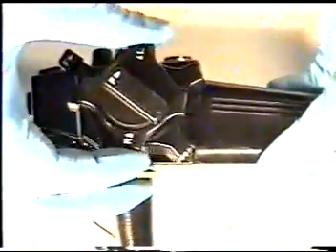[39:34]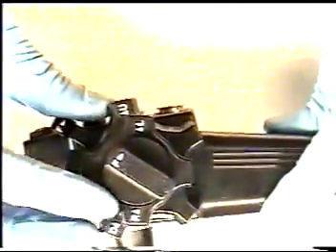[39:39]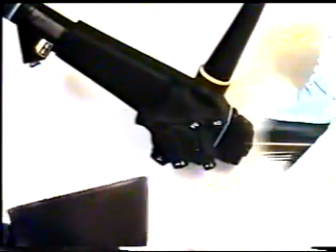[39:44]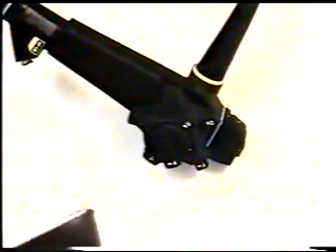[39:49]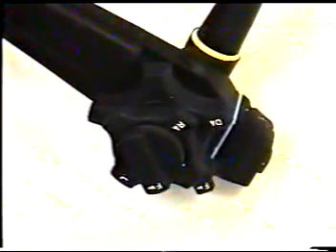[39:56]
Now we will pressure test the endoscope to make sure that all the seals are sealed and there are no leaks in the lock knob controller. Submerge the endoscope while pressure testing to make sure that there are no leaks in the knob section you have just repaired. If there are leaks, you will need to disassemble the knobs again, as we discussed, and seal to be sure that there are absolutely no leaks.